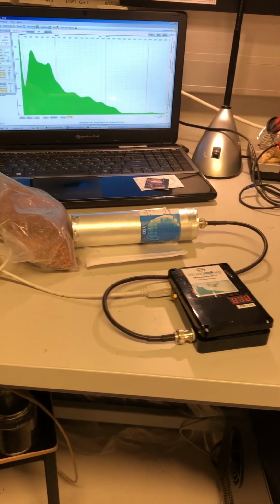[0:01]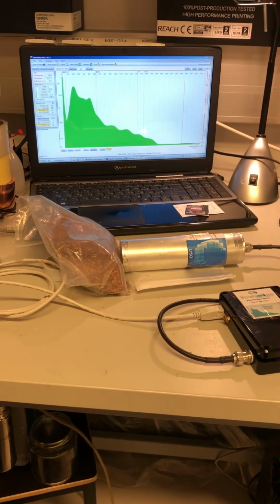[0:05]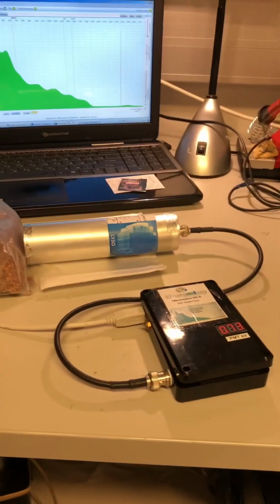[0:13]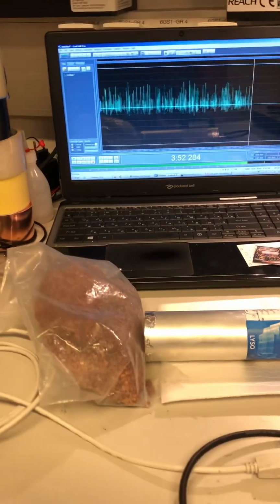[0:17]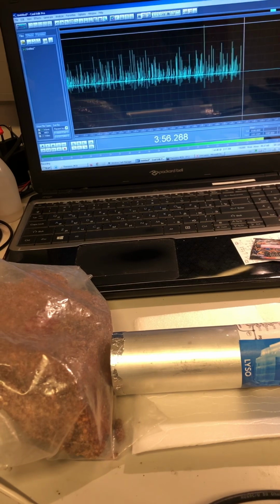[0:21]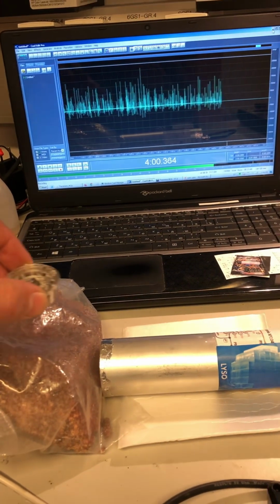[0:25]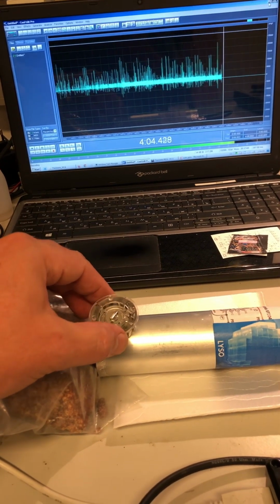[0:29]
This is my second version of the Theremino PMT adapter. I acquired a spectrum of granite overnight, and now I will demonstrate how it works. I use an audio recorder called Cool Edit to record pulses and see that they don't exceed limits. And for testing I use an americium source from a smoke detector.
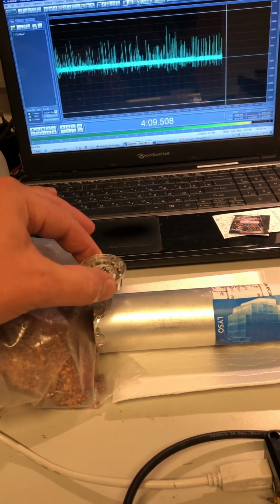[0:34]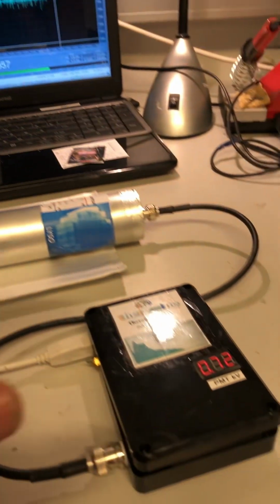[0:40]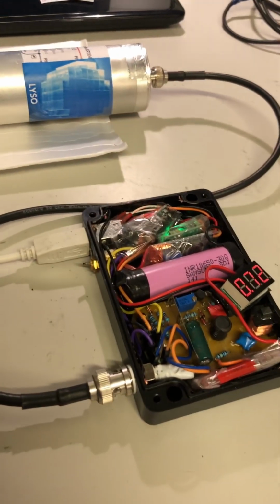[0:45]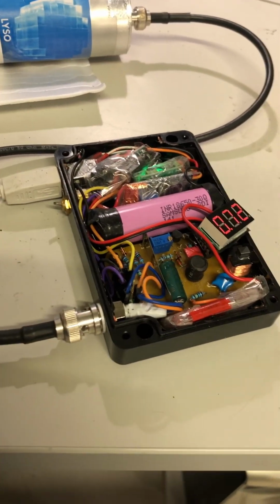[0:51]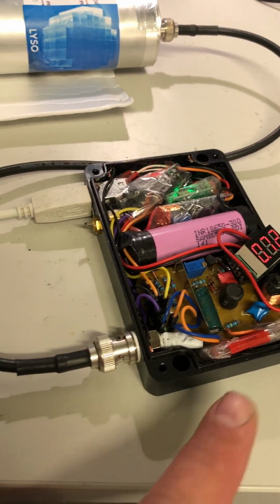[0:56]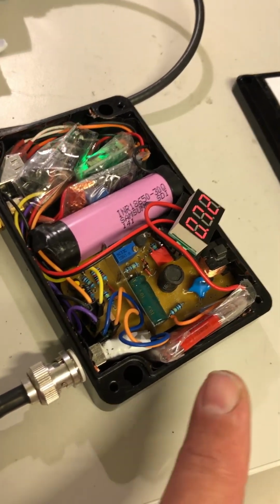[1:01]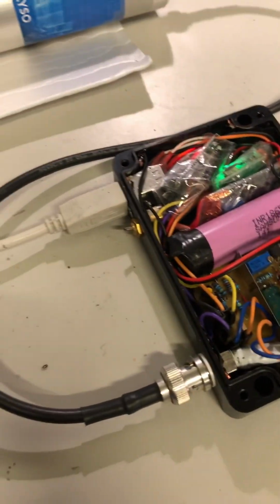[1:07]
Gammas go also through the metal enclosure, and inside the box there is actually a rat's nest. There is the Theremino PMT adapter, which makes high voltage, 720 volts for this PMT. Voltage is measured by a 400 megaohm resistor, 4 times 100 megaohms in series, and it is also battery powered.
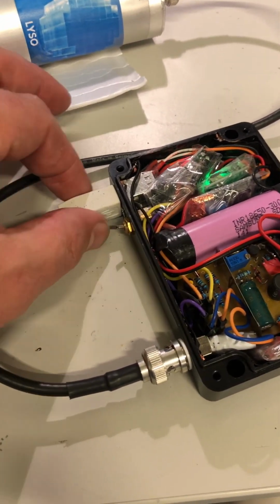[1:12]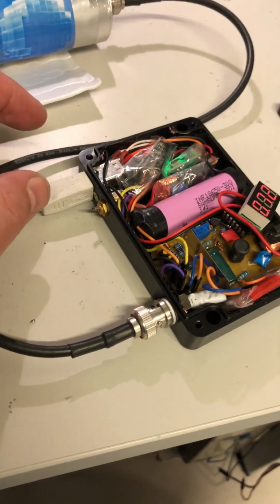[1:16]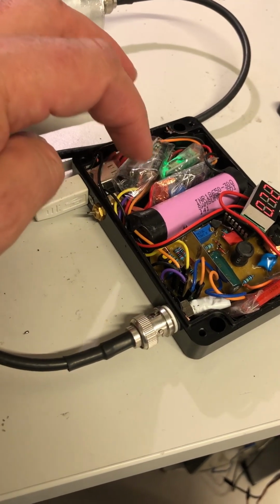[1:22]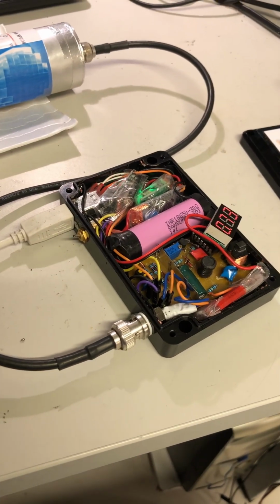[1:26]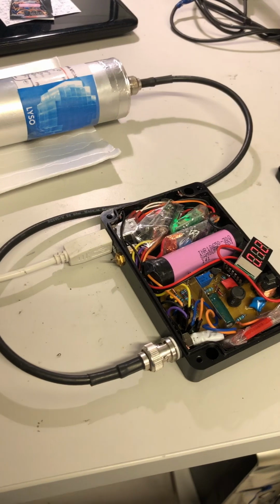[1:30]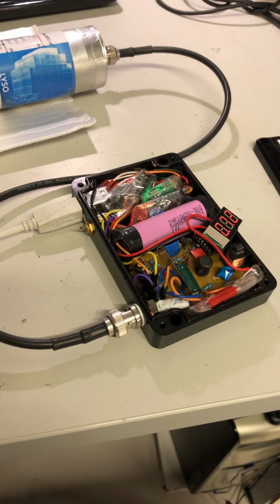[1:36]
Battery is charged from USB, and 5 volts are made out of battery voltage. And here we have a USB sound card. It appears that the USB sound card also needs stable voltage, 5 volts. If this voltage fluctuates, then recorded signal intensity shifts.
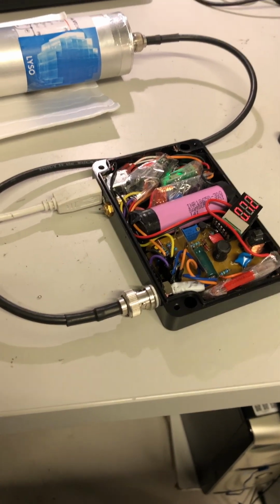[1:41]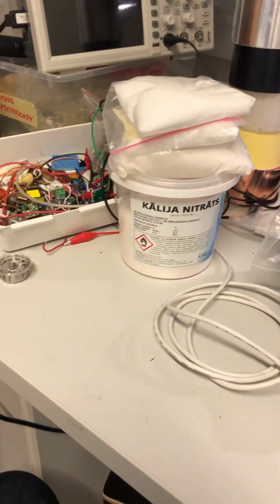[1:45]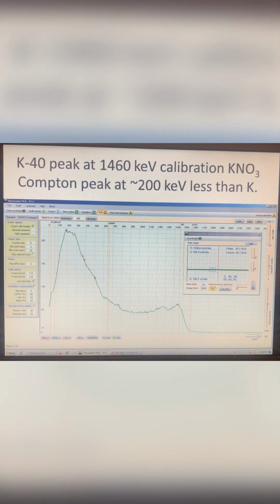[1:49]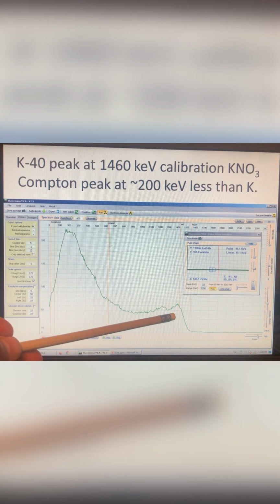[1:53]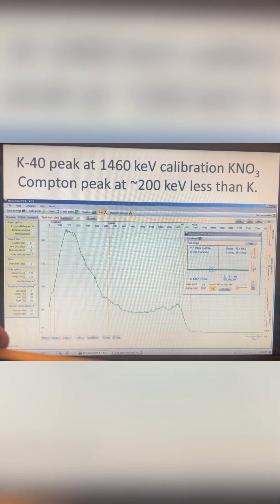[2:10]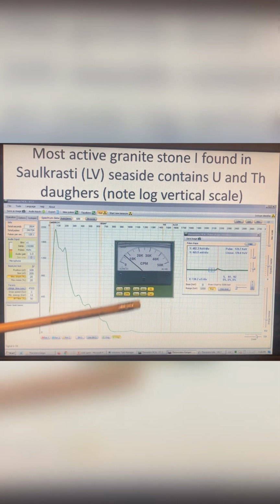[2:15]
And for calibration I use potassium nitrate and americium. First test is to measure the potassium-40 peak at 1.46 MeV, and it is from potassium nitrate fertilizer. And there is a second smaller peak, about 200 keV less in energy. It is the Compton backscattering peak. Then one can put granite stone and measure uranium and thorium and their daughters. This was the most active granite stone which I could find on the seaside, and the measurement was done overnight.
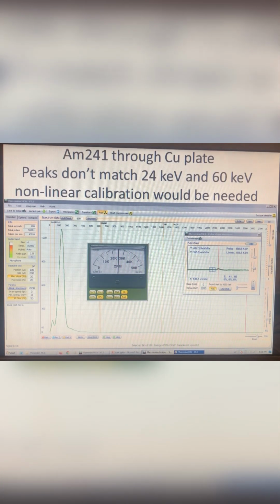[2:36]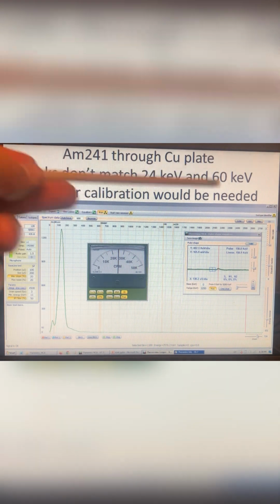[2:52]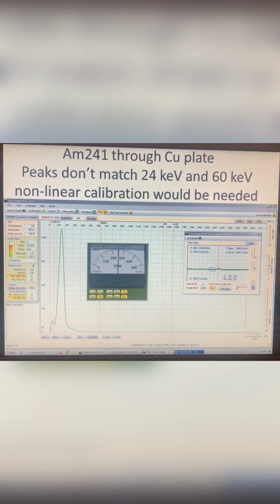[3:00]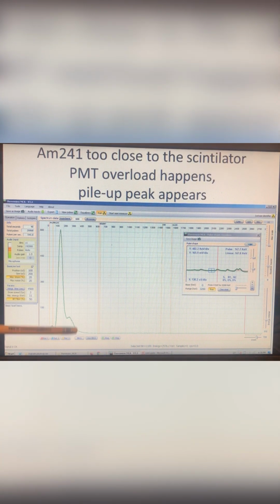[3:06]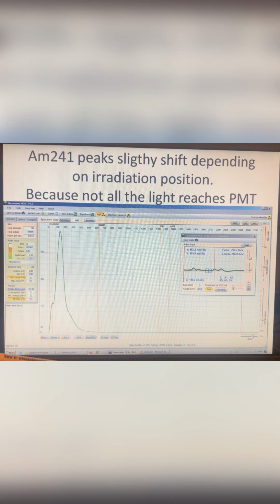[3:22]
Now we move to the test with the americium-241 smoke detector. To attenuate it, it was sent through a copper plate, and we see that peaks at 24 and 60 keV do not match the scale which was calibrated with potassium-40. Activity can be quite high, and at high activity we start to see another, third peak, which is because of pileup, because two pulses come at the same time and overload the PMT and MCA.
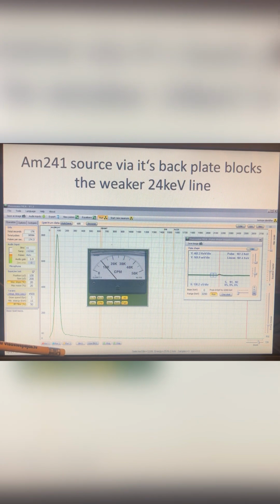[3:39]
And then I noticed that if I move the americium source along the scintillator, I can slightly shift the peak. This can be explained as not all the light reaching the PMT. And then it was interesting to observe that the americium source backplate blocks the weakest americium line at 24 keV, and only the 60 keV line gets through.
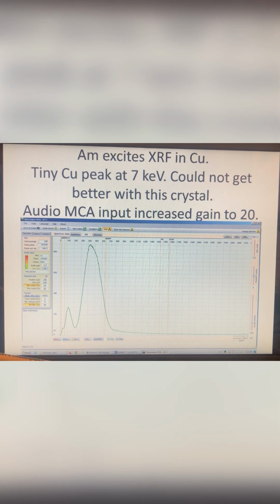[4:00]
Then I also tried X-ray fluorescence, and it was not very successful. I put a copper plate between the americium source and detector, and a small peak appeared which should be around 7 keV, the characteristic line of copper. I could not get better results with this crystal. And to record such small energies, MCA microphone input gain was increased to 20.
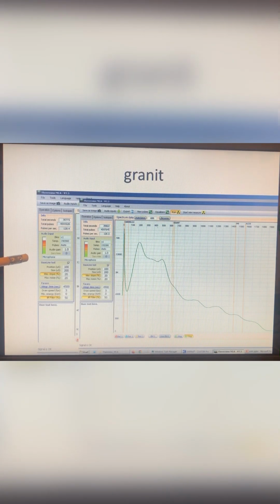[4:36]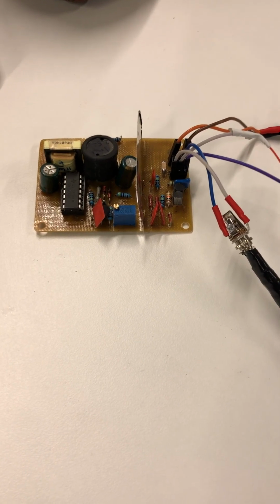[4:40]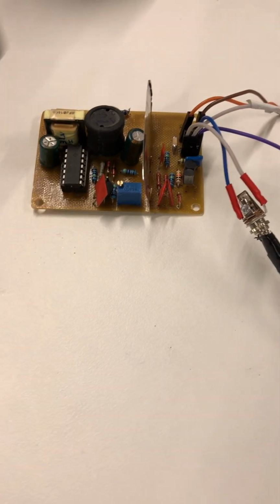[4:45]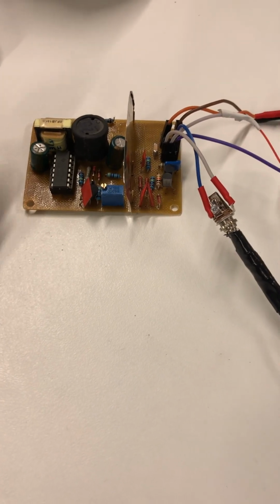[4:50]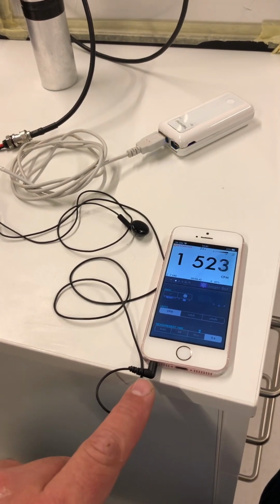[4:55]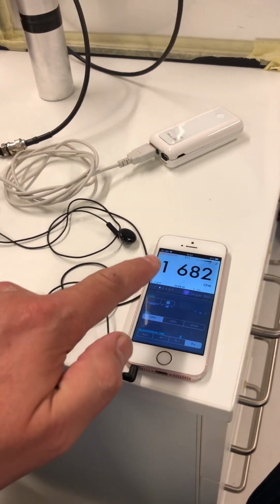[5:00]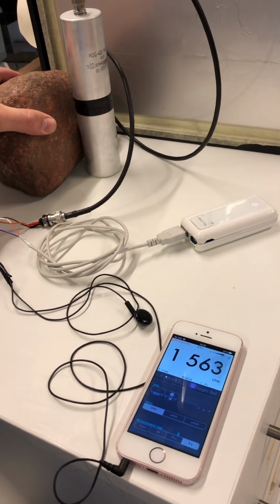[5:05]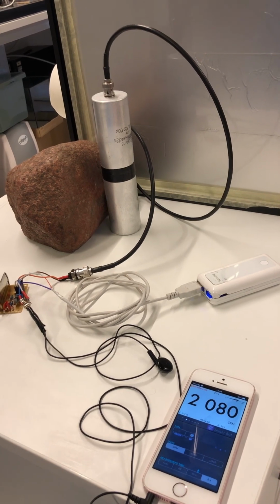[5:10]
This is my first version of the Theremino PMT adapter. I use a coil from a fluorescent lamp, and output goes to an iPhone. Older iPhones still have an audio jack and we see counts. And if I move the stone closer, then it will go to about 1.5 times more.
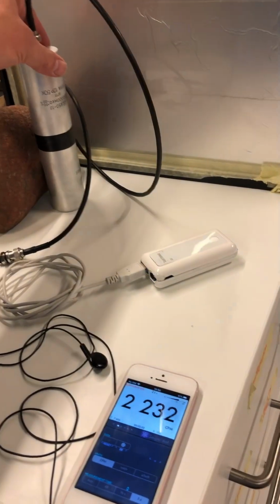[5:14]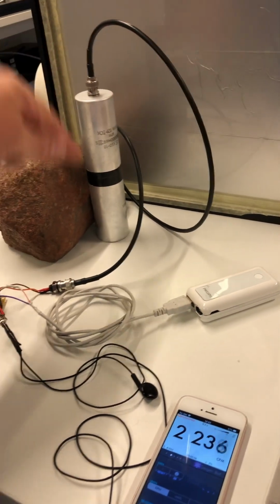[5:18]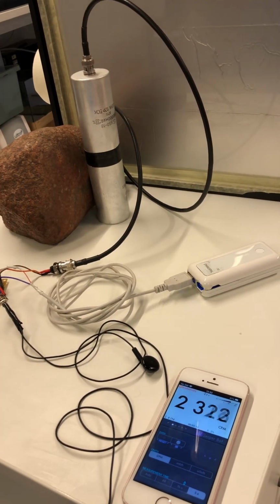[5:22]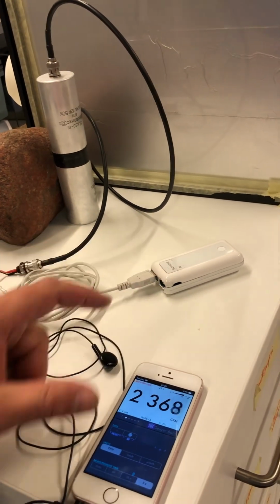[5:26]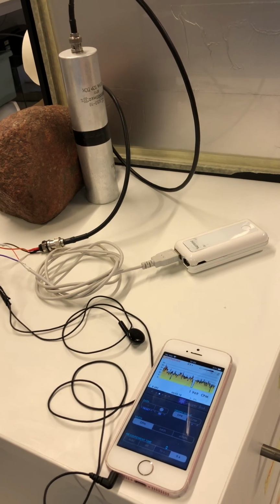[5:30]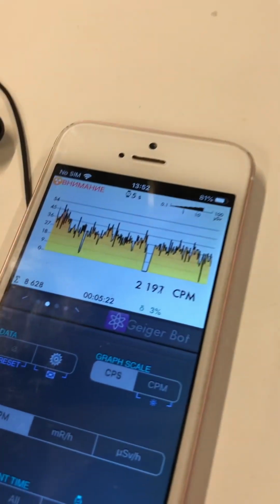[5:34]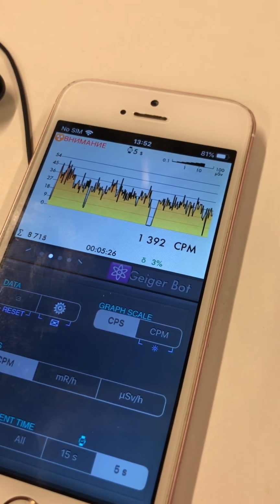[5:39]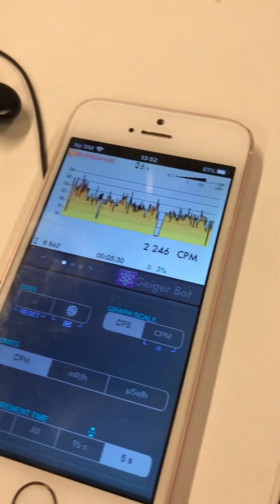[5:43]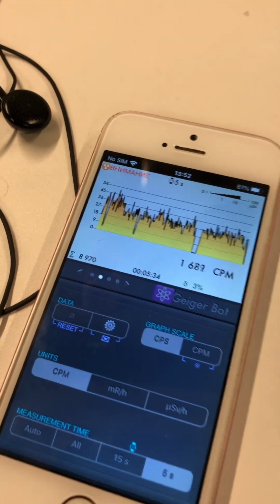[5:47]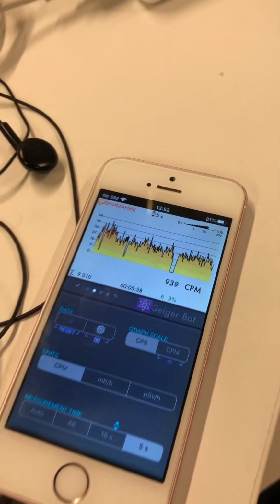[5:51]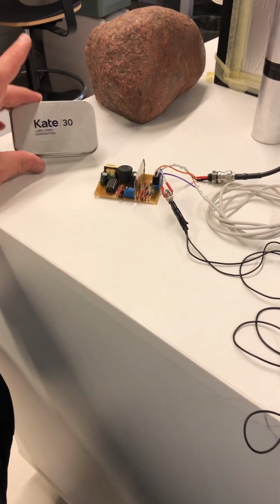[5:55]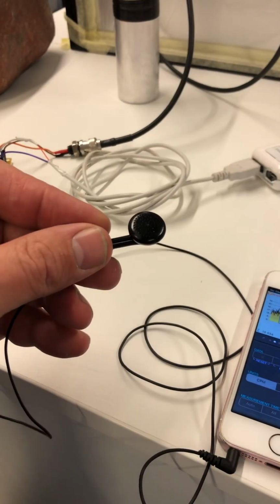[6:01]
Scintillator is in an old electrolytic capacitor's enclosure, which has thin walls, 0.5 millimeter thickness, and everything is supplied from a USB battery pack. So the program GeigerBot shows an increase of counts because of this granite stone. Usually the detector gives about 25 counts per second, and yeah, that's it. I plan to put everything in this nice box, and also we can use an audio speaker to listen to counts.
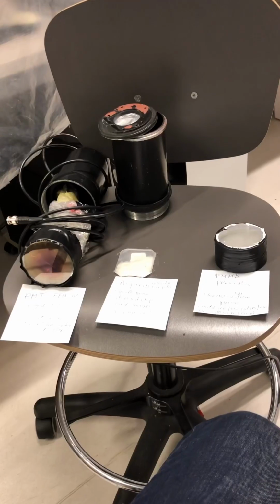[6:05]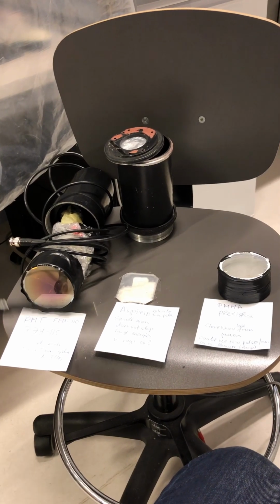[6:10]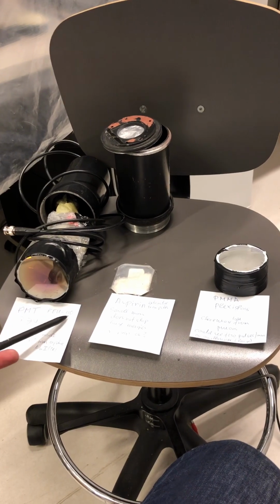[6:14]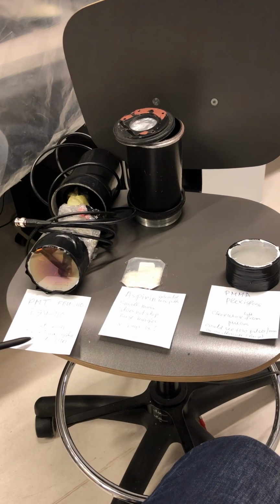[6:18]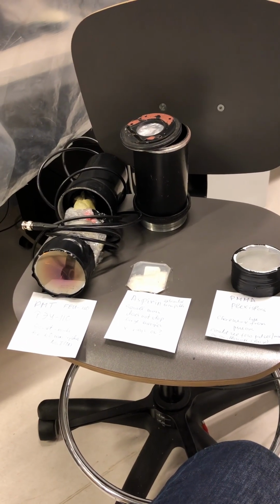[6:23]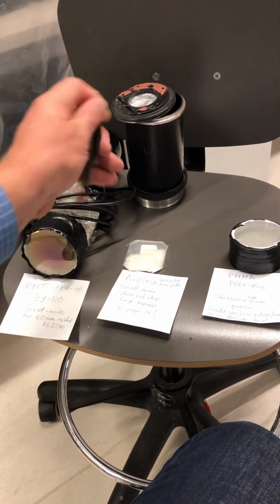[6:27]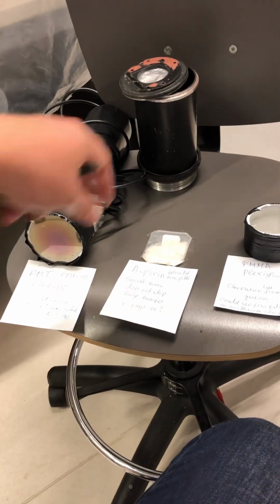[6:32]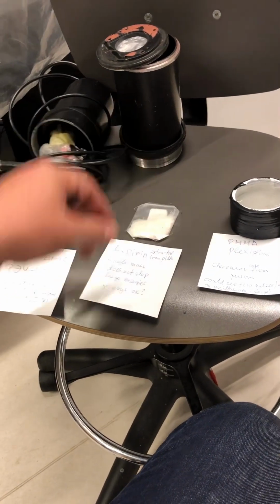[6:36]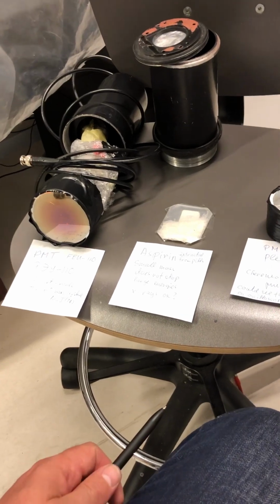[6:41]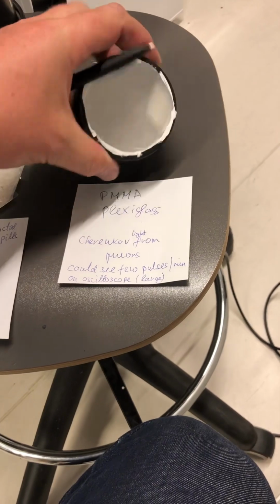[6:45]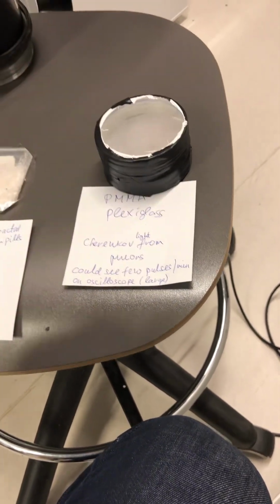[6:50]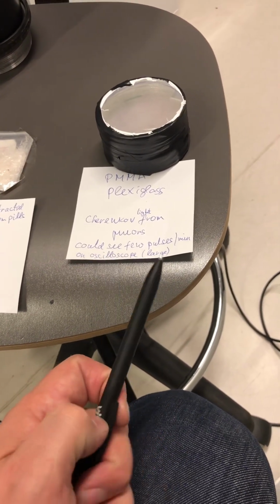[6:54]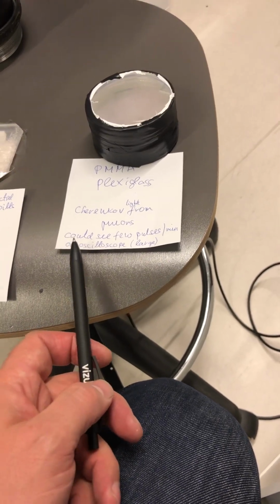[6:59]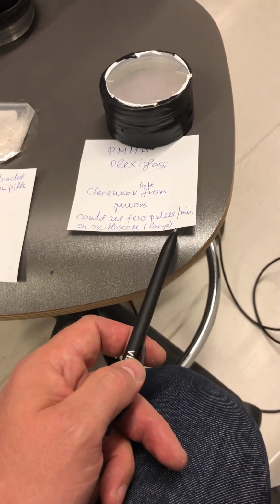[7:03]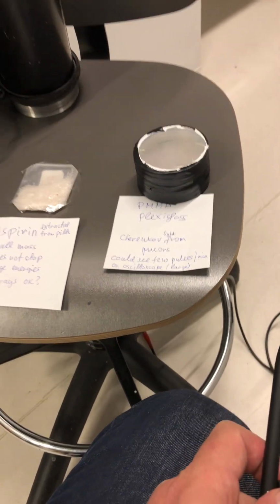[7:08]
My first experience with scintillation started with getting an old photomultiplier FEU-110, Soviet made, which is good for sodium iodide crystals, but I don't have these crystals. So I heard from colleagues that aspirin from drugs can be extracted and crystallized and used as a scintillator, but it is quite lightweight and it does not stop high energy quanta. Maybe for X-rays it's okay. And then I tried plexiglass plastic scintillator, which is undoped, and I could see Cherenkov light pulses from muons, a couple pulses per minute. On oscilloscopes they had quite large amplitude compared to thermal noise.
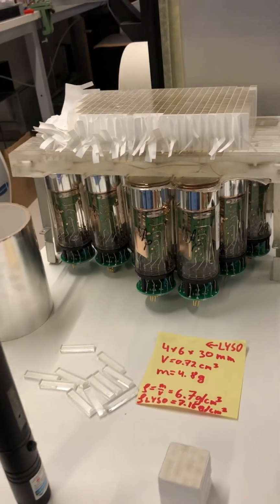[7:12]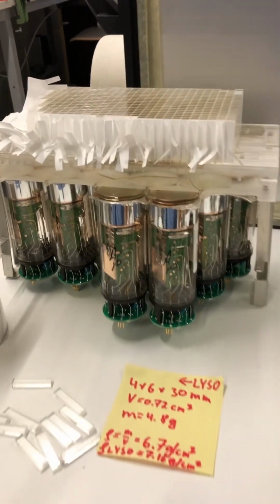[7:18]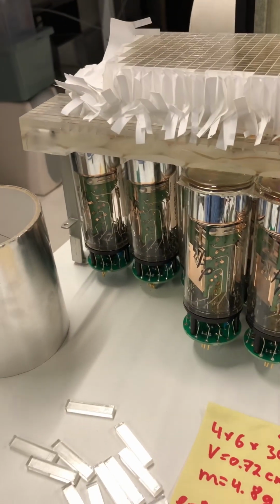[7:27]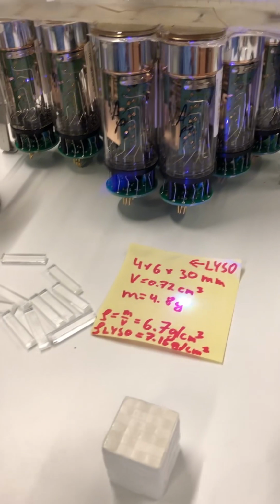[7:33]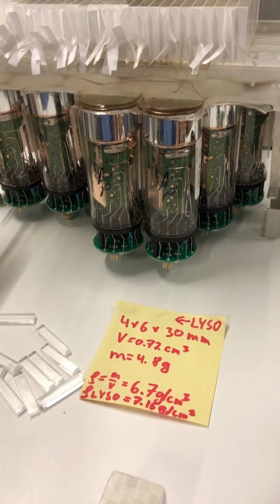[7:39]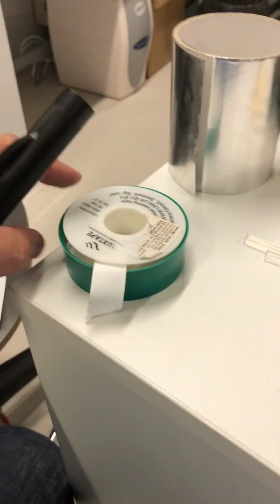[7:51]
And then I was searching around if somebody has scintillation crystals, and the hospital donated a whole positron emission tomography scanner with a lot of crystals and PMTs. I thought that these are cesium iodide crystals, but they appear to be so-called LYSO crystals from density measurements and from a USB spectrometer with visible light. And these crystals can be taped together, and I use Teflon tape and aluminum foil.
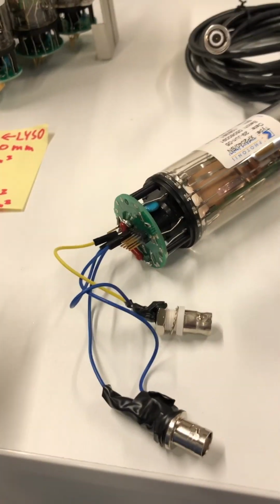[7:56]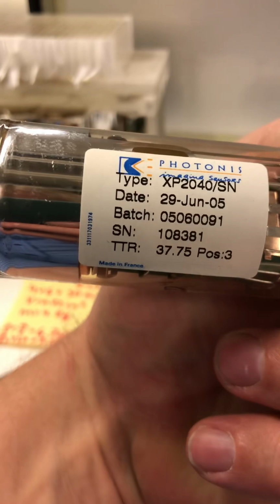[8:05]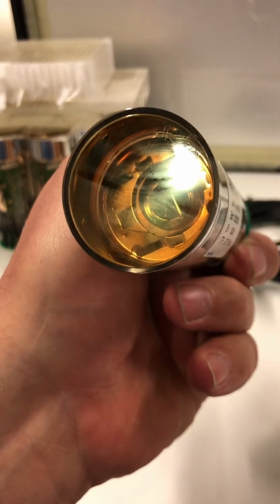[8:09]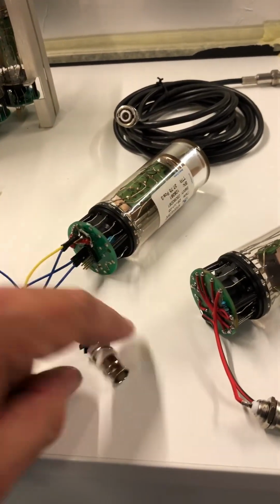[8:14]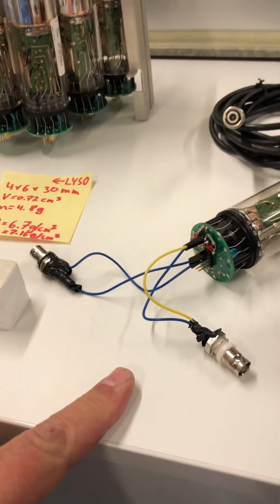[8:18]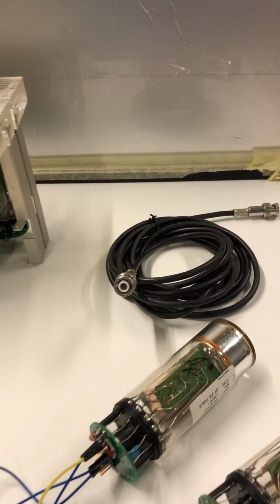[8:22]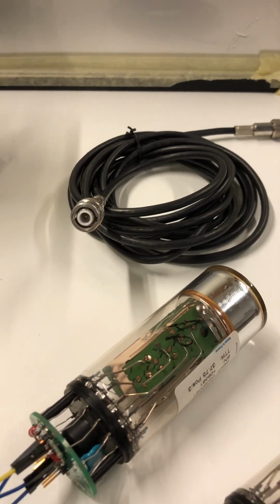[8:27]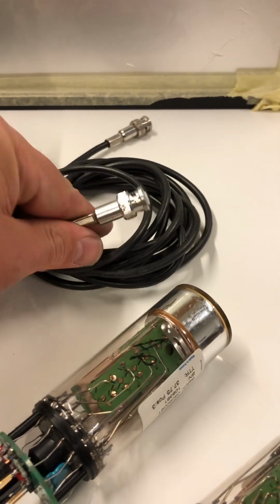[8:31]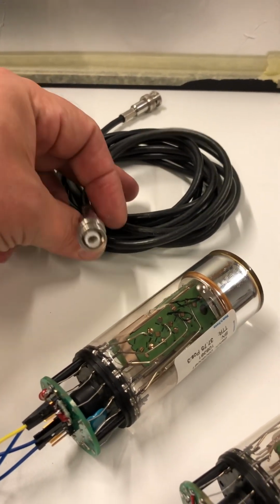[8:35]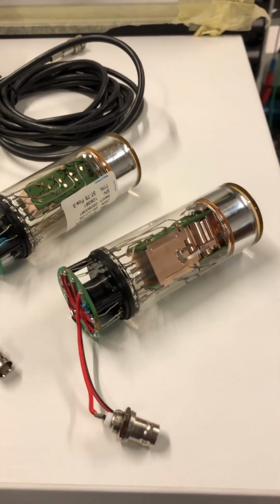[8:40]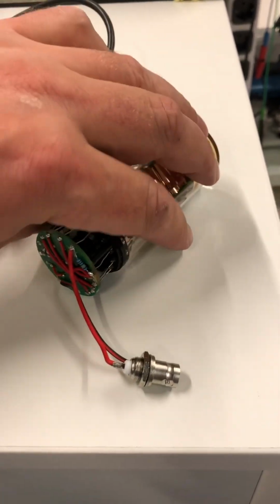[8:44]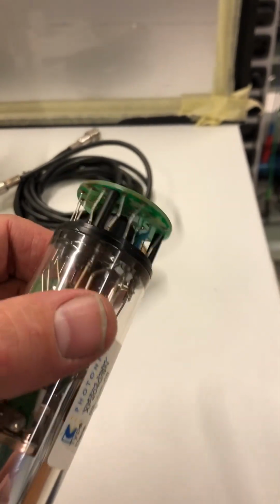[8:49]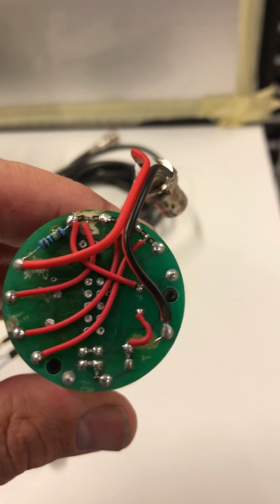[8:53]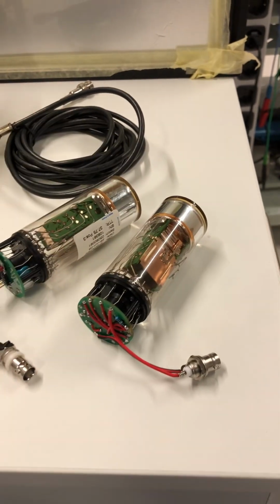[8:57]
And the first try was to use the photomultiplier with the divider as it was inside. Here is the model, Photonis XP2040 photocathode, and with positive voltage supply, then I need two cables. And the divider has 500 kilohm resistors, which are not enough for the Theremino driver. For high voltage, there are high voltage cables and connectors, which look like BNC, but they are for 3 to 5 kilovolts. And then I removed the resistors with hot air and a Dremel mill, and soldered the divider with 10 megaohm resistors. And now the PMT is good for the Theremino driver.
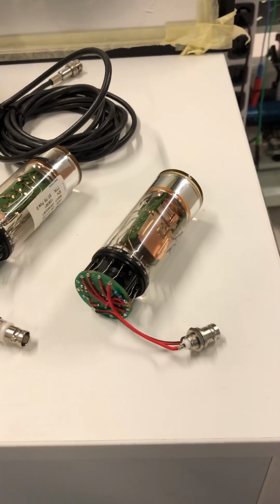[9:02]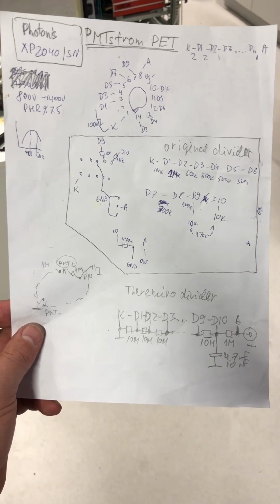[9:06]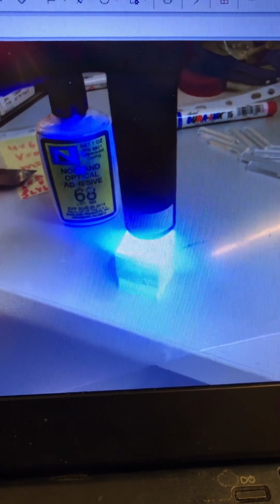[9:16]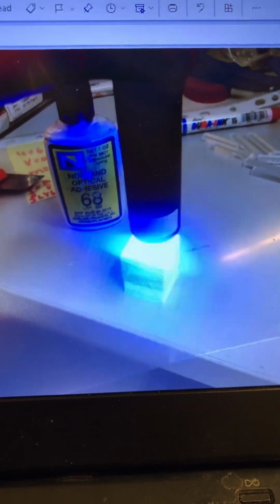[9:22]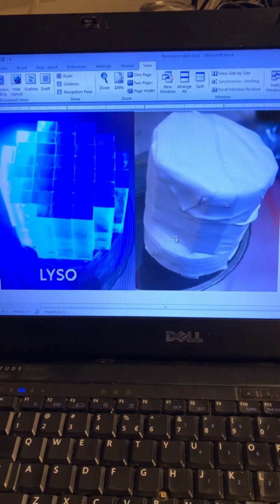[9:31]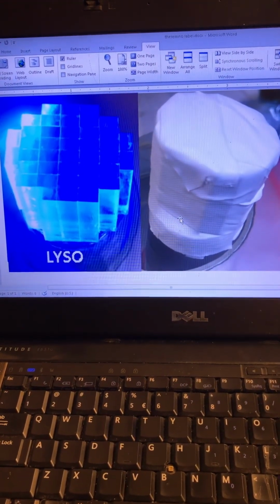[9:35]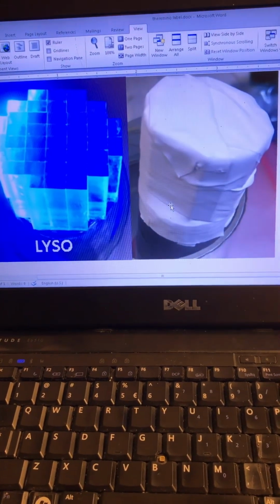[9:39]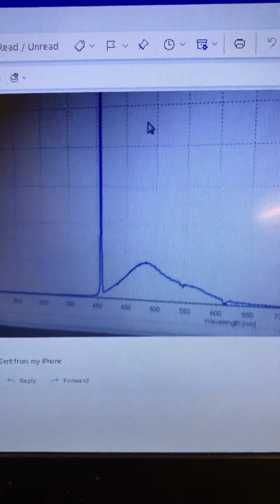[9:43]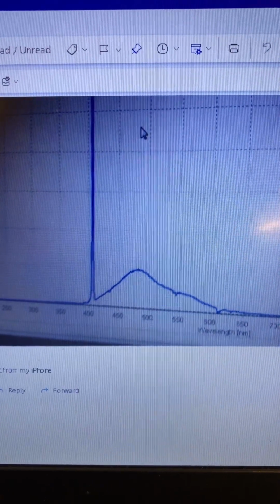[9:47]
Here is a schematic of the original PMT and modified for Theremino. I tried to glue crystals together with Norland Adhesives optical UV hardening polymer glue, but I'm not sure if it is good or bad. Another crystal I just put together and taped with white Teflon tape. Well, I also tried a more fancy crystal arrangement and glued them with Norland light hardening polymer glue. Here you can see the measured luminescence spectrum that allows me to say that it is a LYSO crystal.